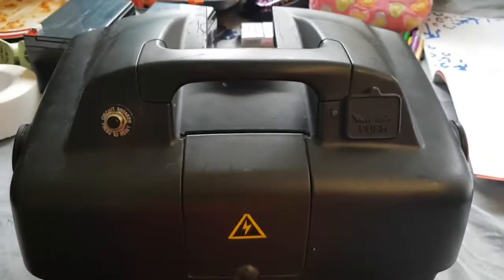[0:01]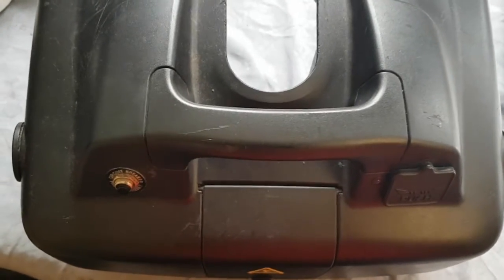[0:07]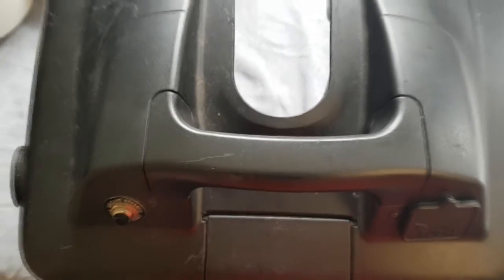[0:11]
Hi, today I'm going to show you how to change the batteries in an INVACARE LYNX scooter. This is the battery pack.
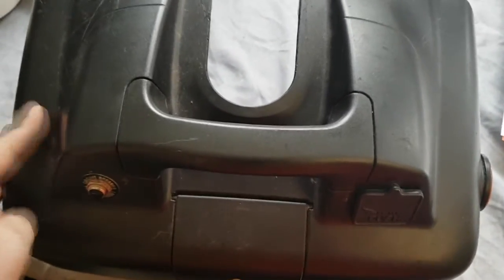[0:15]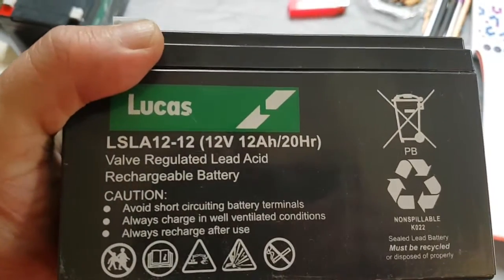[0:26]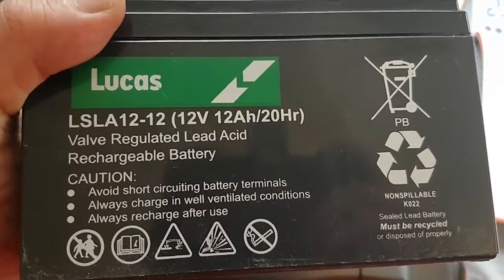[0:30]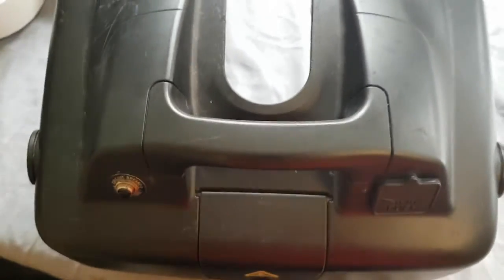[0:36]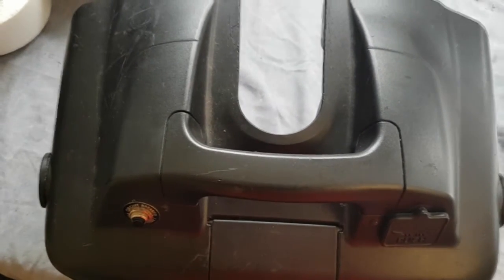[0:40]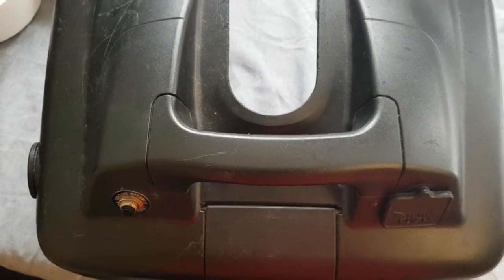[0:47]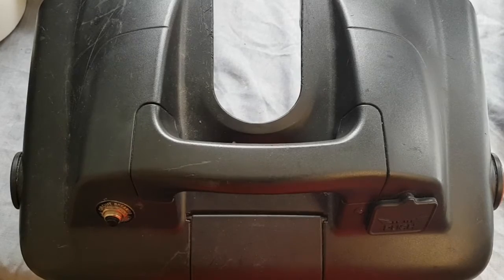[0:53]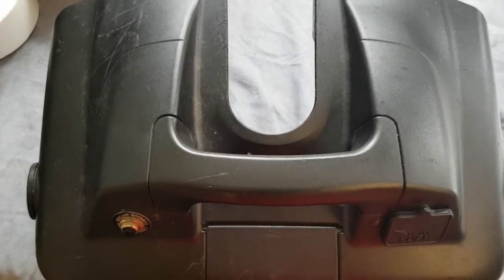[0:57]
Sometimes the batteries go, obviously, and I've bought the batteries that are needed: 12 volt 12 amp. I bought this one off Amazon for £22, which is reasonably good considering there are other places you can go, and for the same basic battery they'll charge you £30. They will put them in for you. I'm not going to say the name and place, but they will put them in for you. But 30 quid, if you can do it at home, then it's a bit cheaper, isn't it?
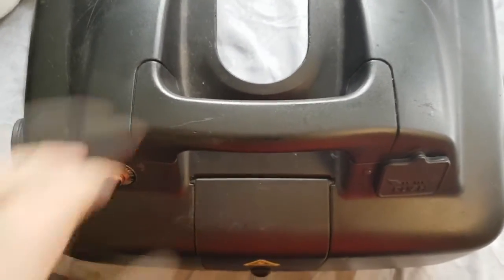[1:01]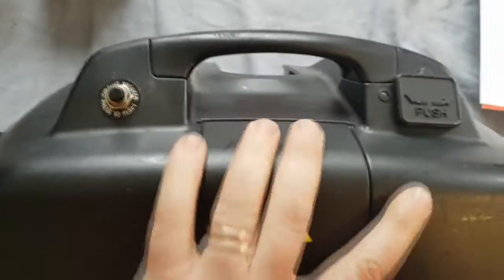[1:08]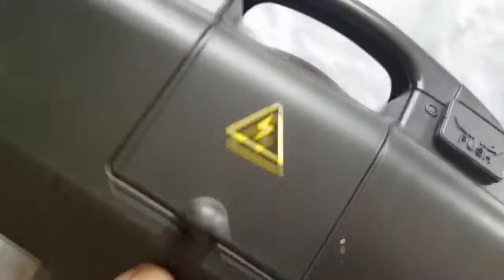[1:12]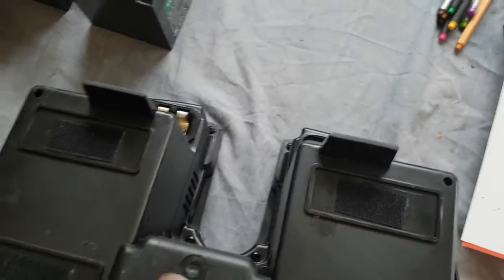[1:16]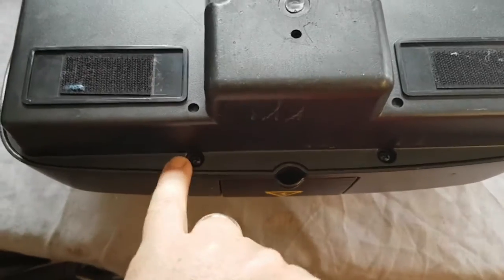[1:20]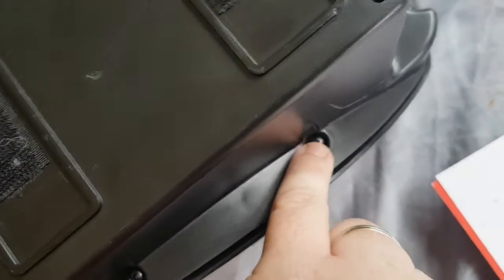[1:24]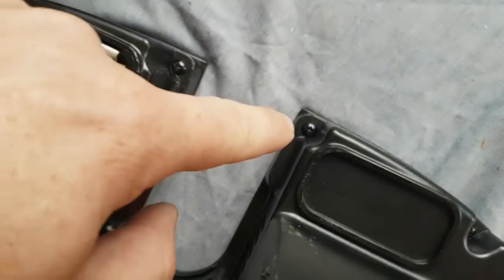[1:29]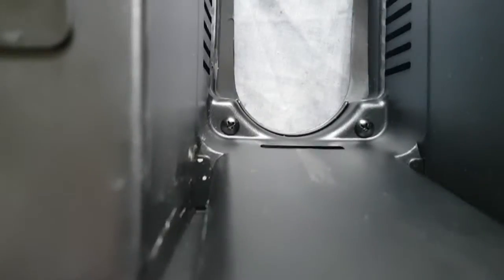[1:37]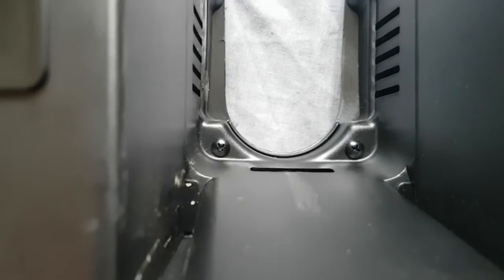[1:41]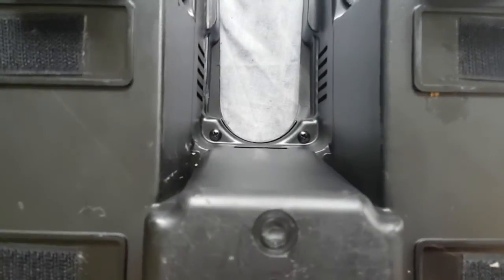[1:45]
Right, so if I turn this over, hopefully, it's a bit heavy. On the underside there are 12 screws all in all. There, one there, obviously, there, and then there's two right on the inside, which will need to be taken out as well. So 10 on the outside, and then 2 on the inside. Right, I'm gonna get on with that now.
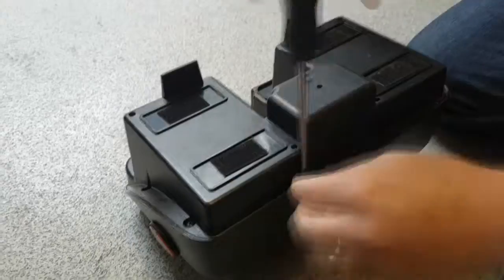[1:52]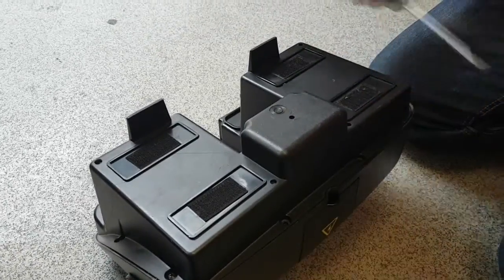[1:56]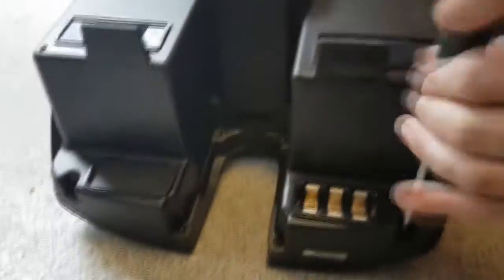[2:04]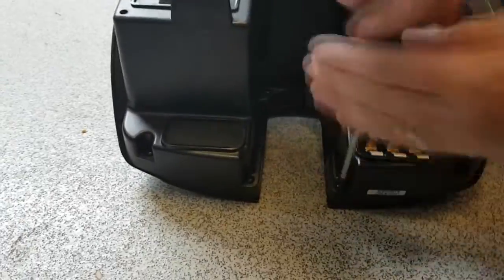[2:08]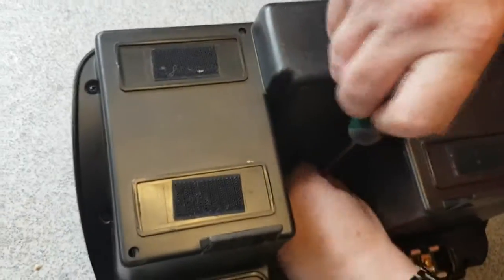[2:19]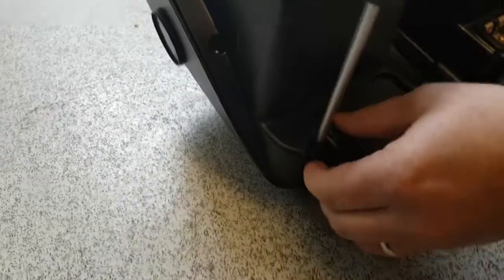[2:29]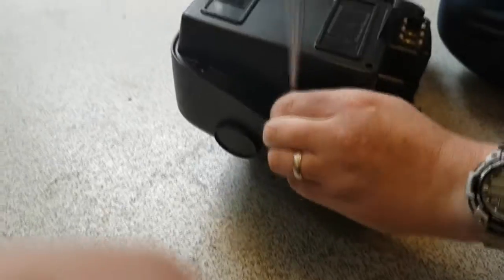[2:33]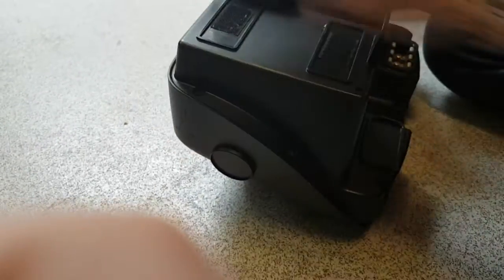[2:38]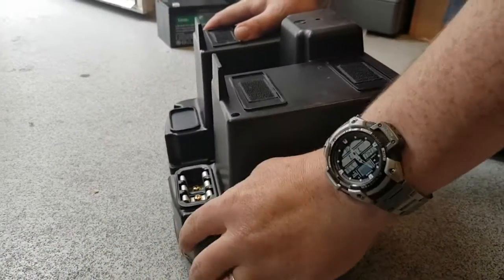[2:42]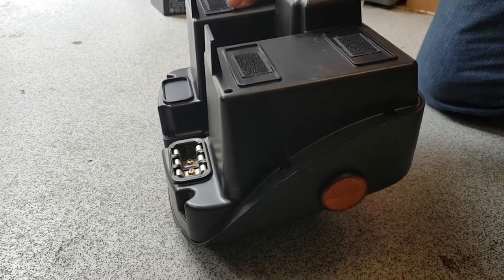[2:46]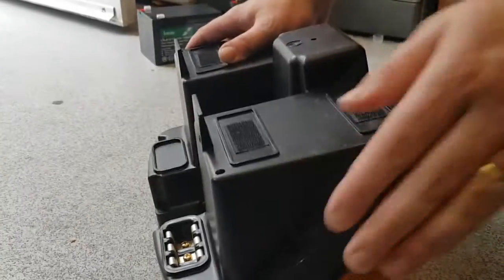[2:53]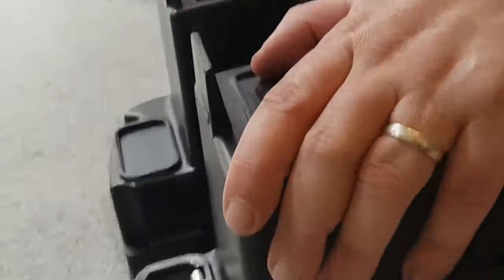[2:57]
Right, now we've got all those screws out. Just important to know, these screws are all the same size, so you can just put them into one pile, it'll be fine. There's no different size screws to make sure it's different places, so that's fine.
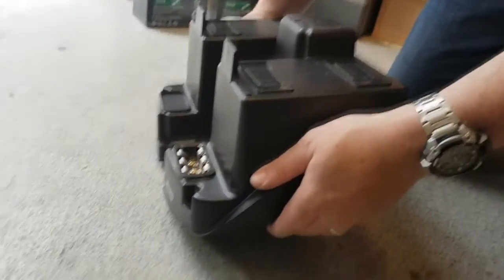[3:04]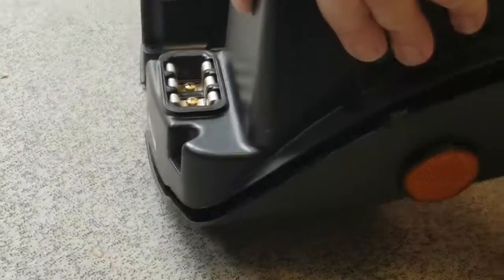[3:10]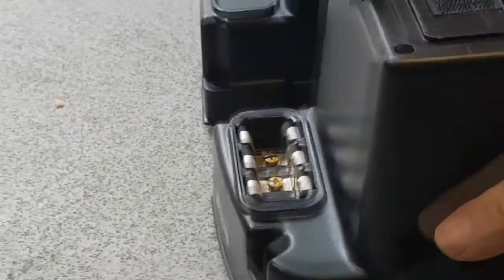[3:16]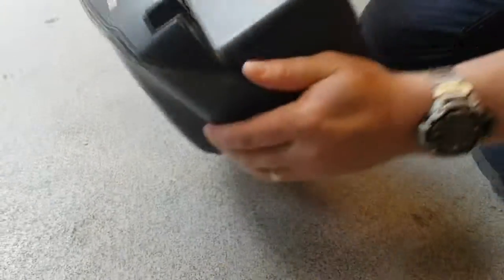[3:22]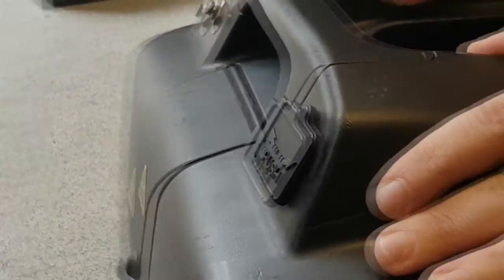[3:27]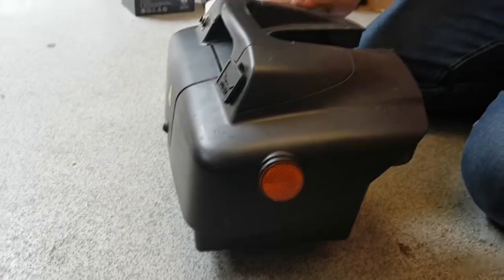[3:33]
Right, you've now got to hold it by here, and the same on the other side, to turn it. Because if you try and do it like that, the top will come off, see, like so, and that's not a good way to do it. What I find is easier is grab it by there, hold it, and turn it this way. Alright, so now we've got it the right way up, and you can just lift, not go nuts though, just lift slowly, and that'll come out. Okay, now it's opened.
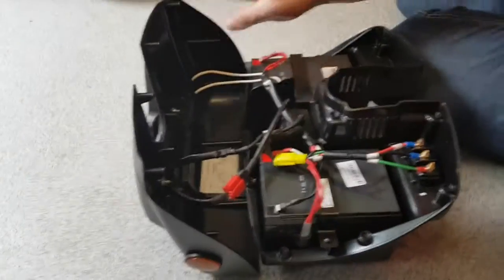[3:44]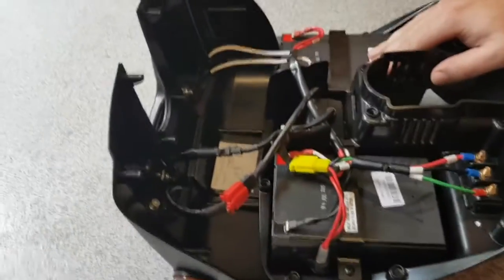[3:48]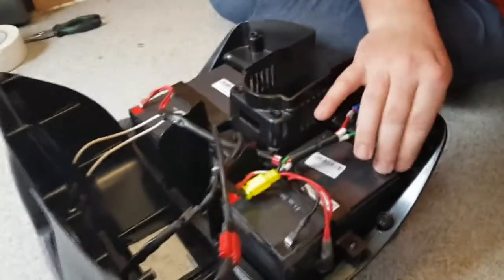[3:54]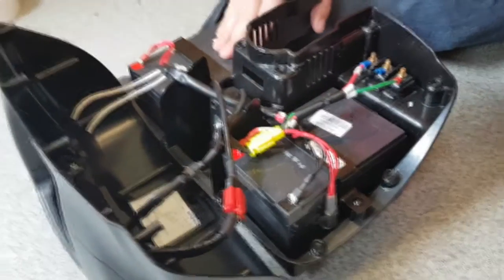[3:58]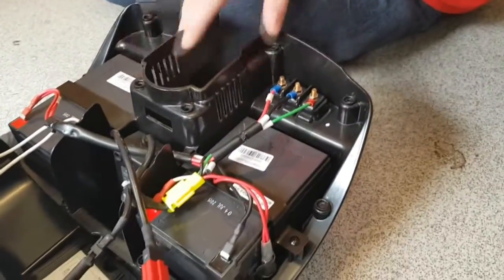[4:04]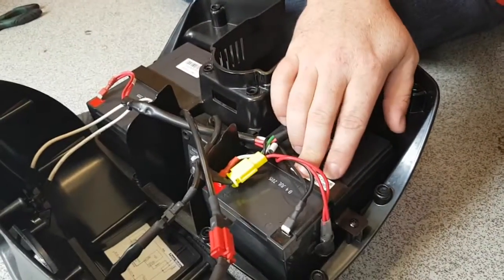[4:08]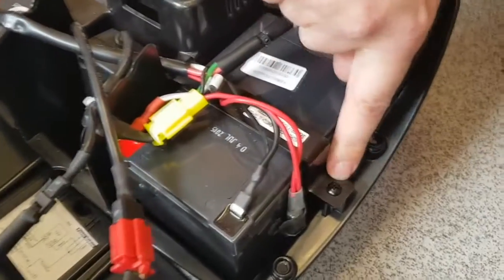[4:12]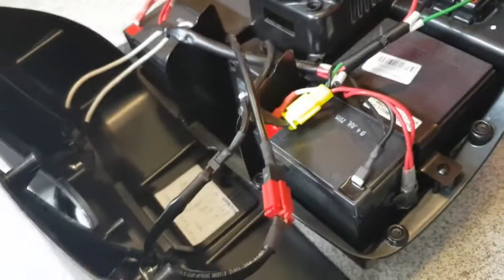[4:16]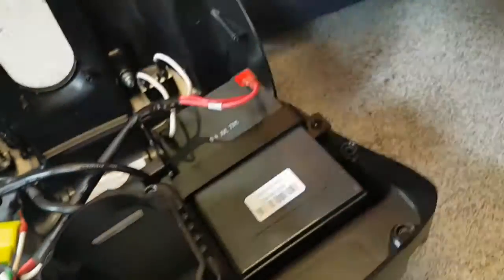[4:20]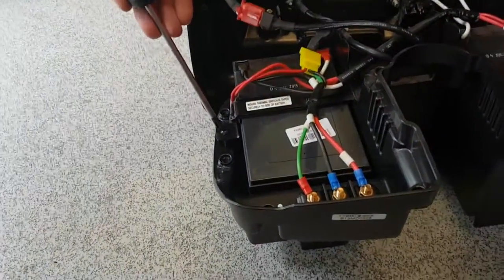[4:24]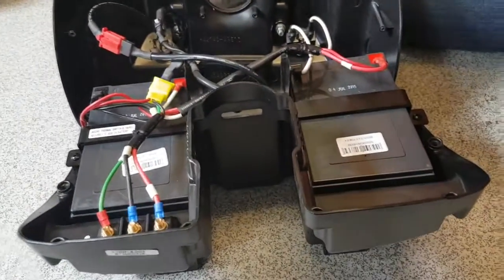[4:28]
There you'll notice there's 2 batteries in it, and according to the online manual, this is the left side, this is the right side. Now the easiest way to see which side it is, have this bit facing towards you. You'll notice that they're secured in place with these brackets, with a screw that side and a screw that side. If I turn it towards the camera, you can see the screw there, then the screw there. So I'm not going to unscrew them yet, I'm going to take the wiring off.
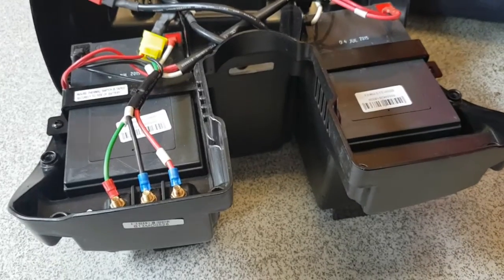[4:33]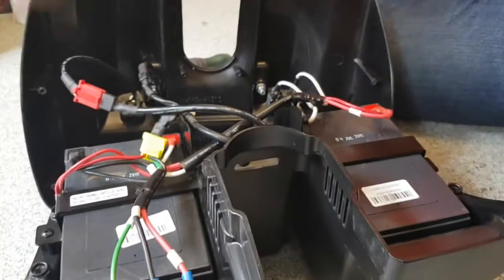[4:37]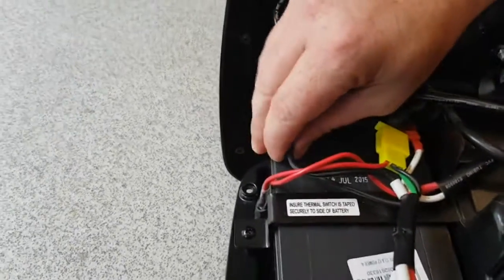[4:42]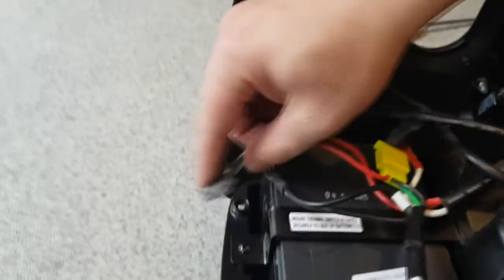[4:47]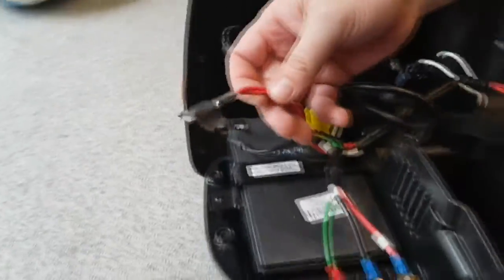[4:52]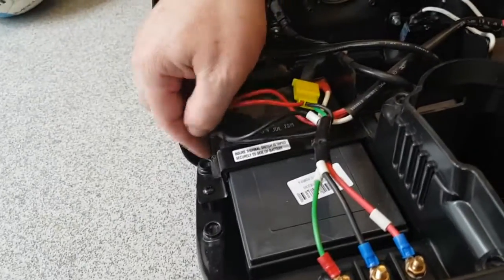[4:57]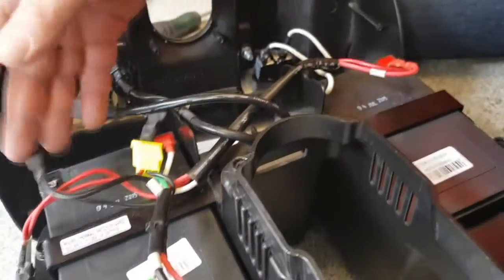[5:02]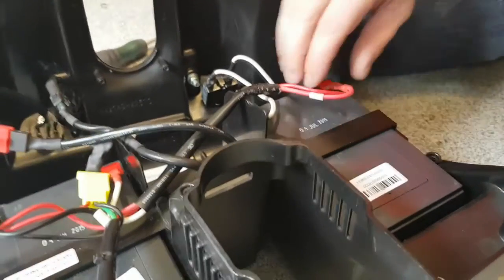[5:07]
Now, again, according to the manuals, there's a certain way to do this, and that's by disconnecting the negative black lead from the left hand side first. So that should be secured on there, and that is a thermal switch, so it's a thermal cut-off. I'll tell you more about that soon. Right, so we've undone that one. The next one is this red one on the right hand side.
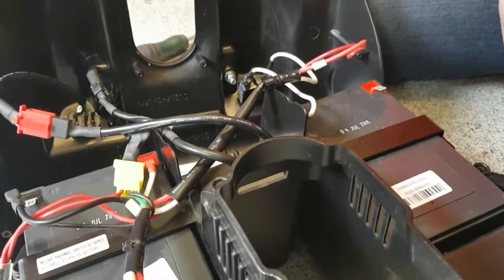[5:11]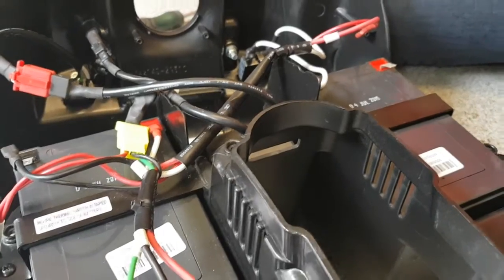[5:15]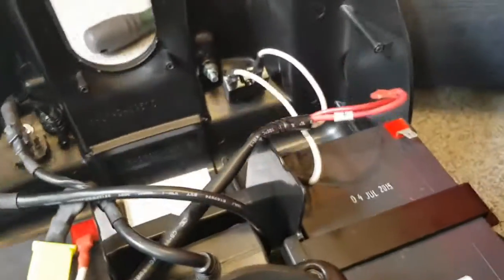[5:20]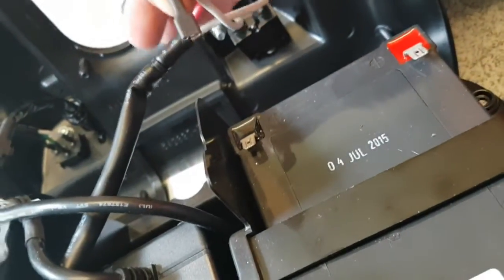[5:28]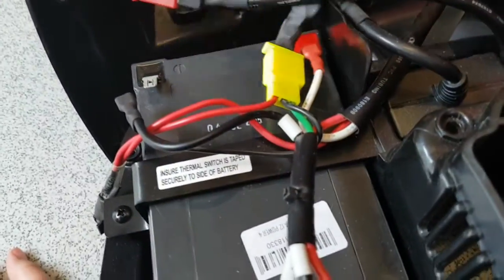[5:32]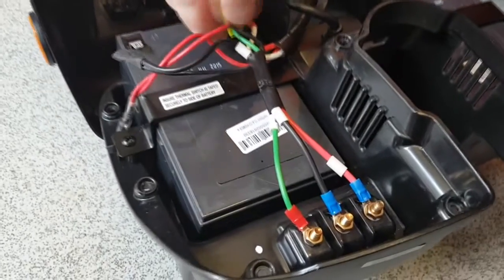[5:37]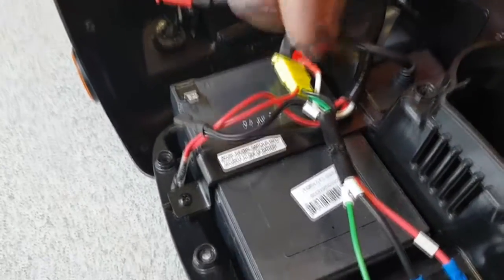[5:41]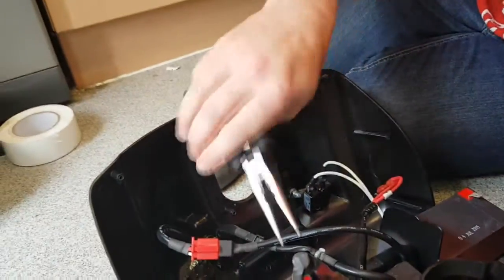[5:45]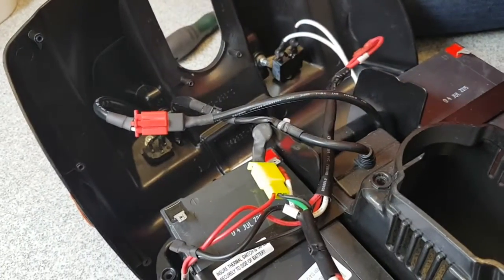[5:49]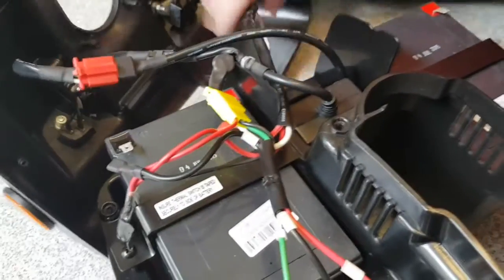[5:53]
So we undo that, and then the next one is the white lead here. It is a bit of a pull, unfortunately. They don't give a lot of room. Alright, so we just pull that off, or wiggle it off. So that's off now. Then this is going to be a bit more awkward because you've got all this here and it's a nightmare. So you can either try and grab it or grab a pair of needle nose pliers, just grab it and there, away. So you've now undone all of those.
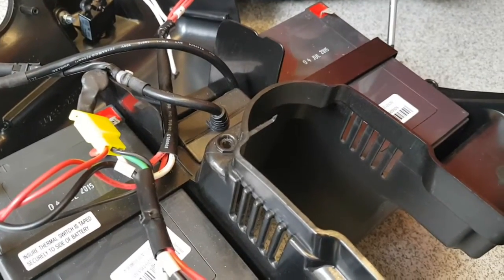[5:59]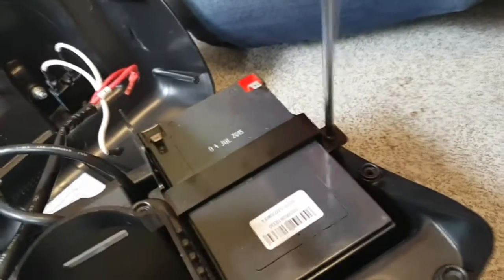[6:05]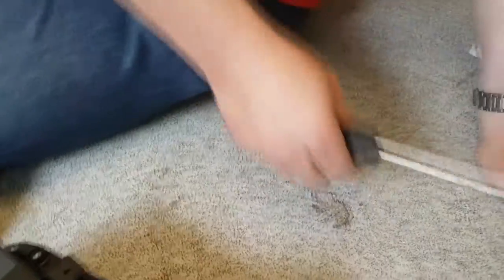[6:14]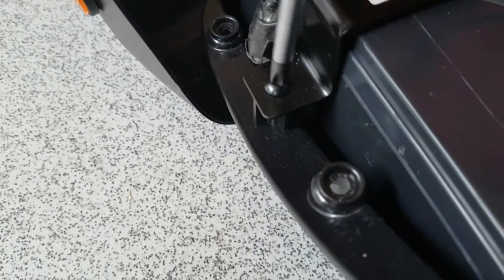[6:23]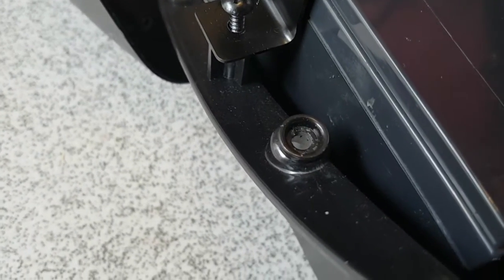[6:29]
Now what we're going to do is unscrew these and take the plates off. These are, I believe, the same size as the other ones. The other ones have gone missing, so I don't know where they are. Lots happened while trying to film this, so unfortunately it's a lot of stop starting and grandchildren and stuff like that. So undo those. I would keep these separate just in case. Okay, so just put them over there a minute.
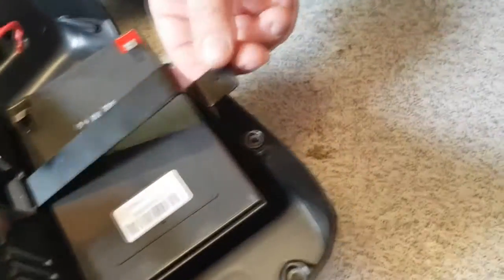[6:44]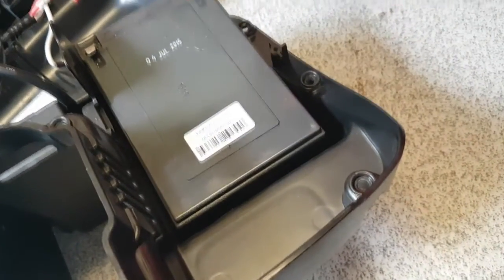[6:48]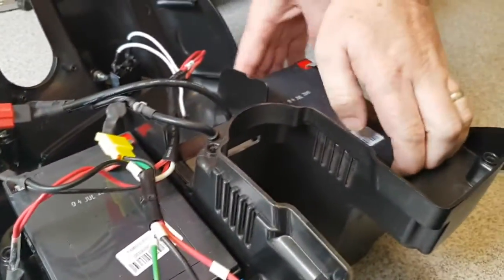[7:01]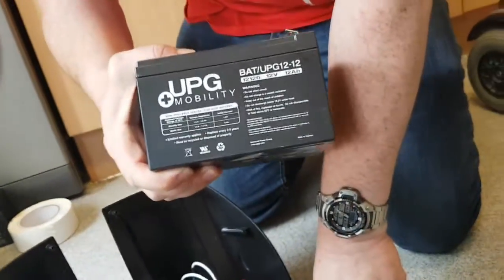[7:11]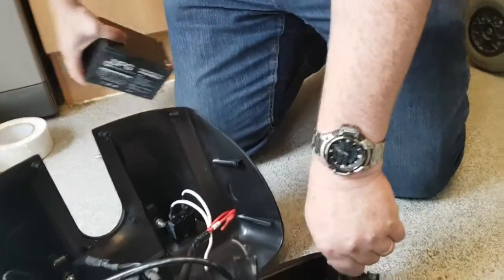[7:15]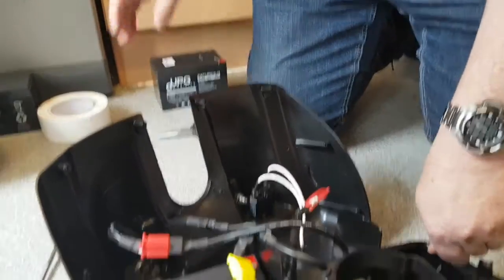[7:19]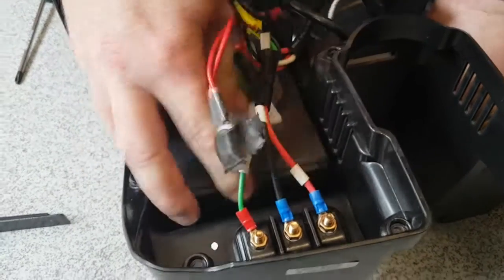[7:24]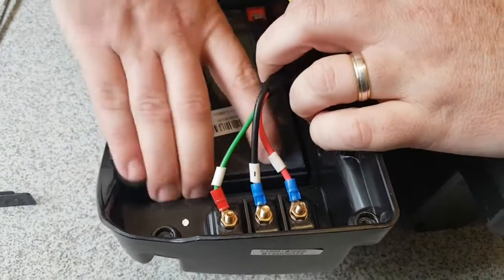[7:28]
Now, just to release a plate, where you've undone the screw, just lift, pull out. Oh, that's all it is, simple as. Alright, so we'll do the same to this side, lift and pull out. Now, I'll keep them each way. Right, so there we go, that's the one I had in there, and really heavy. Well, they are heavy anyway. Just put those by the side. Right, I'll keep the pressure on there. You're going to have to be careful with the leads, obviously.
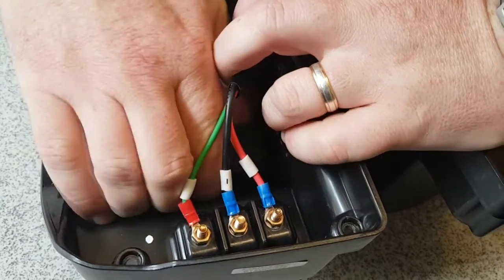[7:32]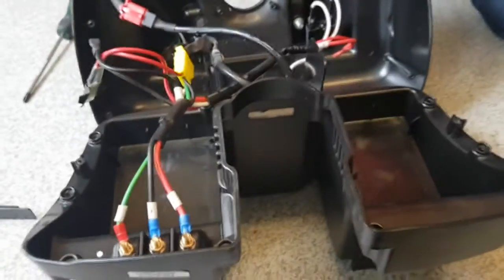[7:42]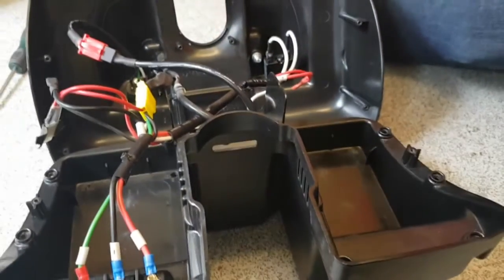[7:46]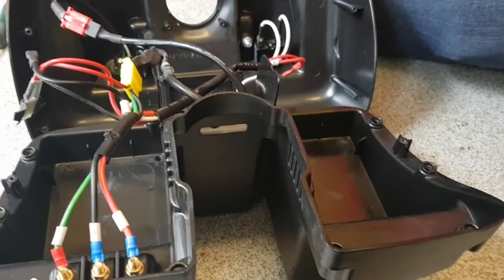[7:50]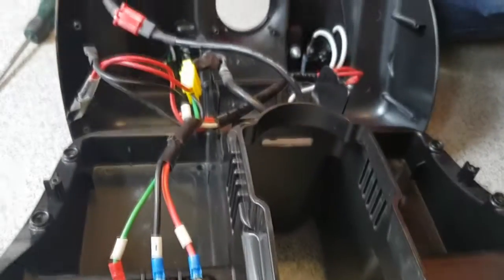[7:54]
These are... right, there we go. So those are the two that were put in there, unfortunately, a year ago, and we've noticed now that they seem to be going downhill. They're not holding their charge as much, so unfortunately we've had to replace them.
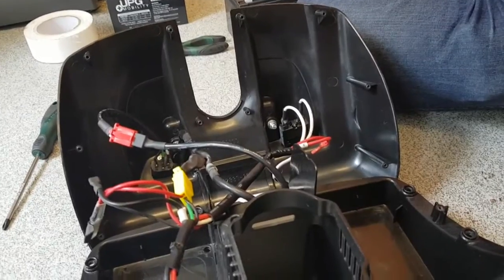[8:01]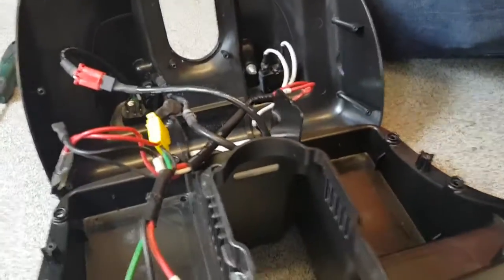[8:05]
Right, so we made sure they're exactly the same. So they are 12/12s, exactly what comes out is going in. Right, so.
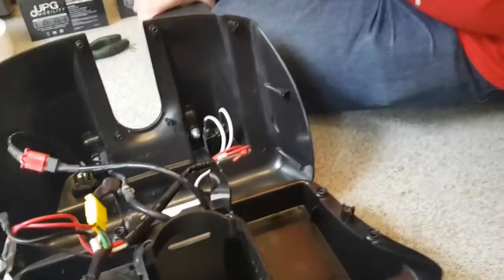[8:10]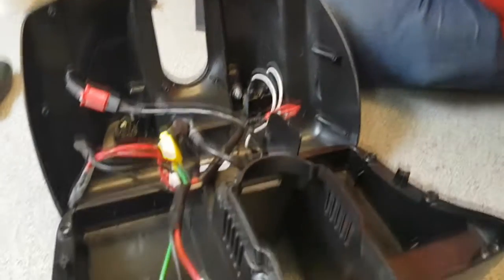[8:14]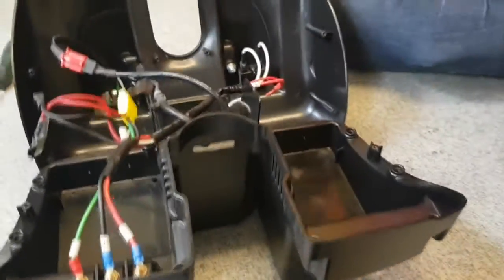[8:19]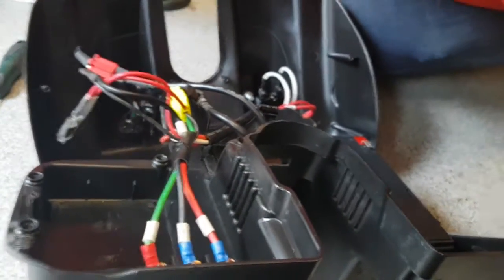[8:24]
Sorry. Luke, go out, please. Grandchildren, sorry.
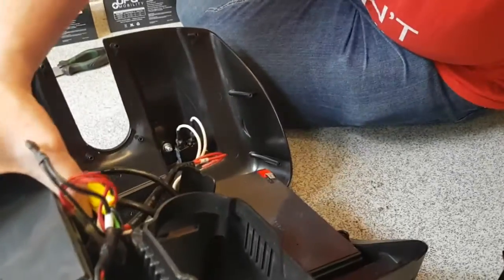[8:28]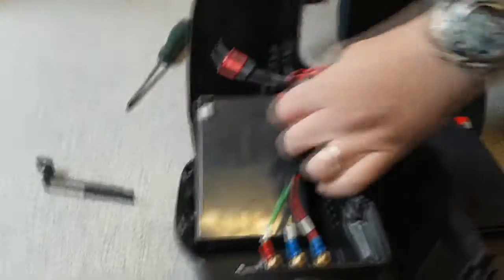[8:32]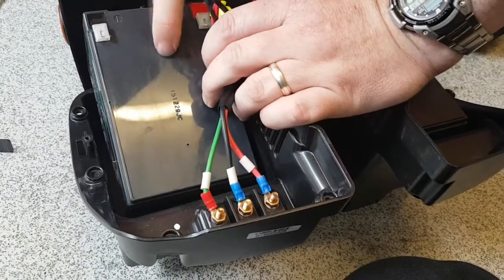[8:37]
Right, okay. I'll put these in each side. I'm going to take the wires away. But this, I'm going to leave like that for a minute.
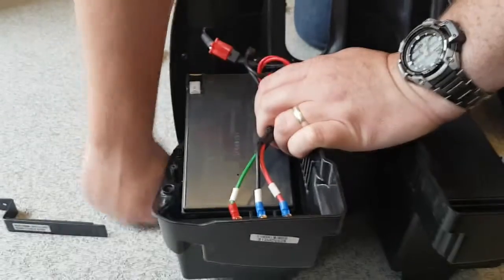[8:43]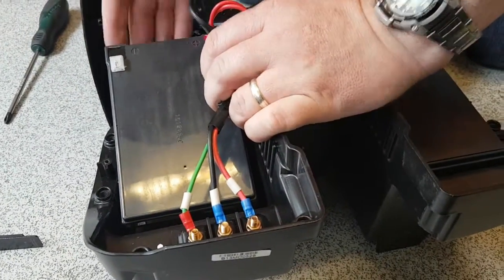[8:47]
Pause a second. Sorry. Or is it still recording? Yeah. Right, I do apologise for that again.
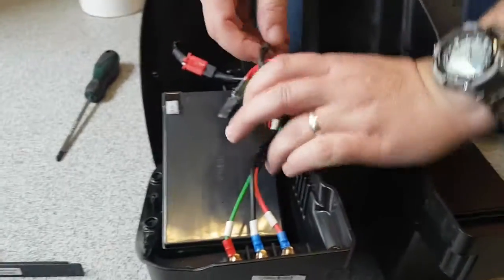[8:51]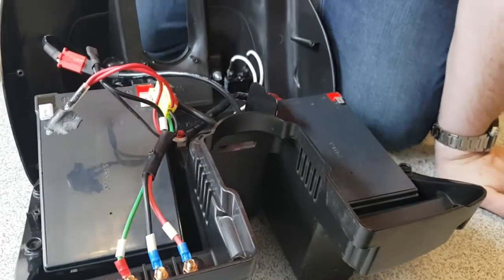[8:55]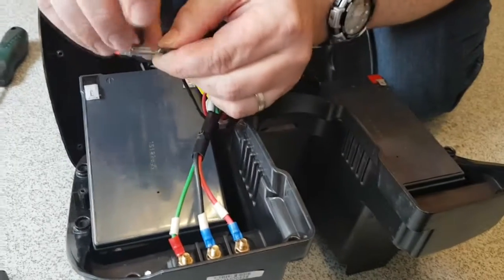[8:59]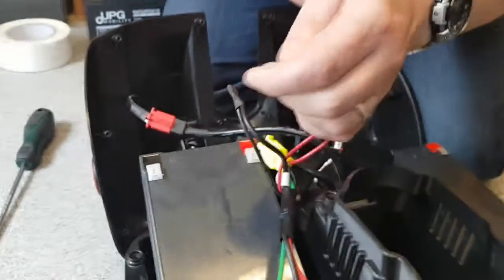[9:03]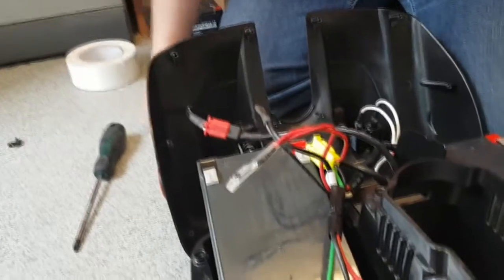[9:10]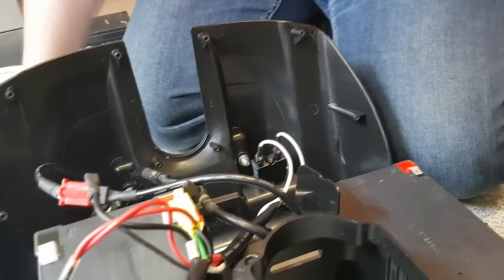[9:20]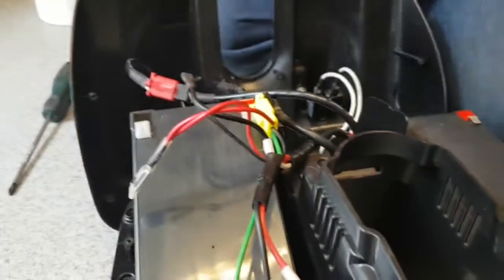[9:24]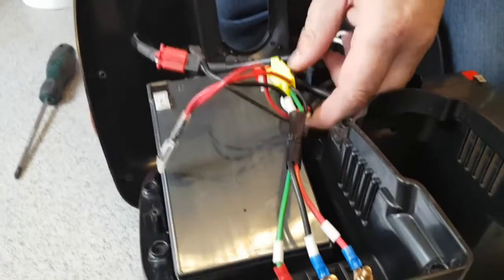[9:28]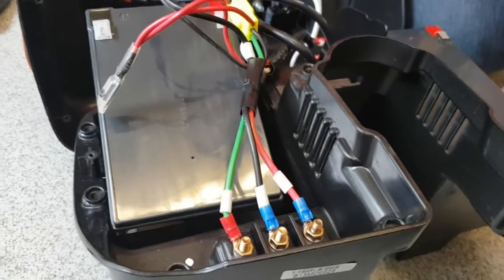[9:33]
I'm going to leave this like this for a second because here is a bit that comes into play. Now, this is, as I said before, your thermal cutoff. I think if the battery gets too warm, then it cuts off power or hits the trip switch, which is here. I could be wrong, but according to the manuals, this tape is supposed to be on it, but it would be on it if you got it serviced.
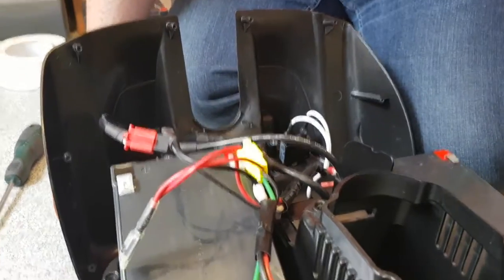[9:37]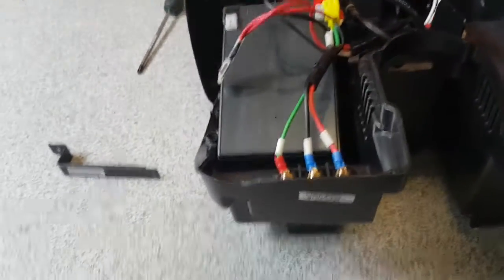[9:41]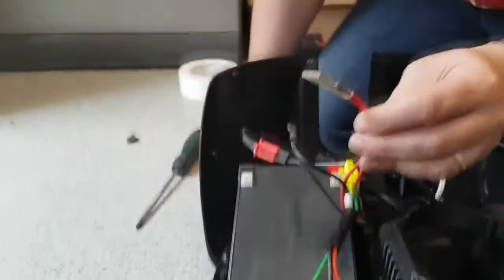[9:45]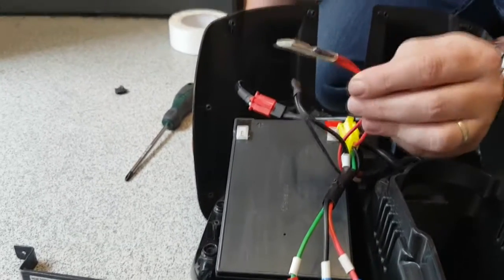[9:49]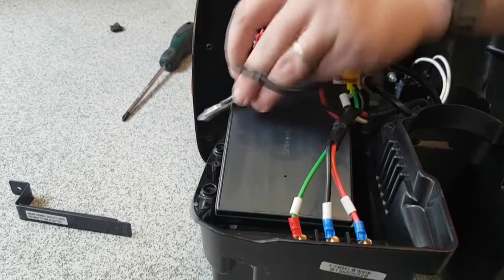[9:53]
Actually, I tell a lie there. On the manuals it said if you get it done professionally or by one of the shops, they replace the tape. But because I was there when they replaced the batteries last time, they didn't replace the tape. They just took it off and put the tape on that was there already.
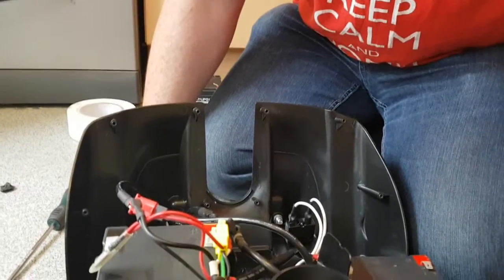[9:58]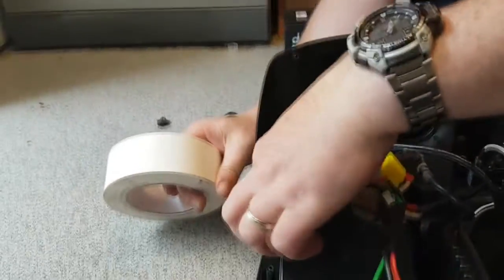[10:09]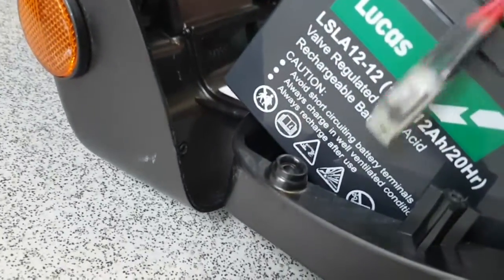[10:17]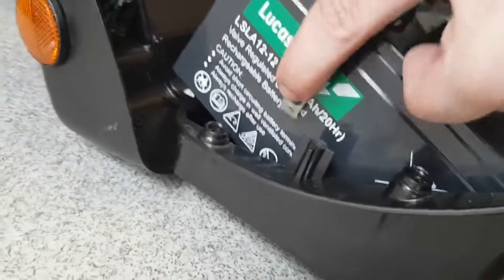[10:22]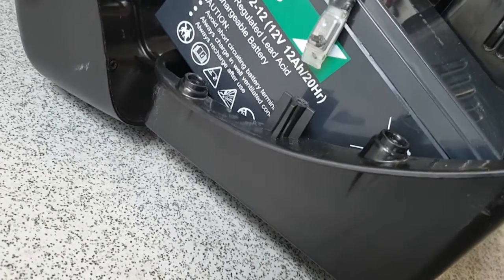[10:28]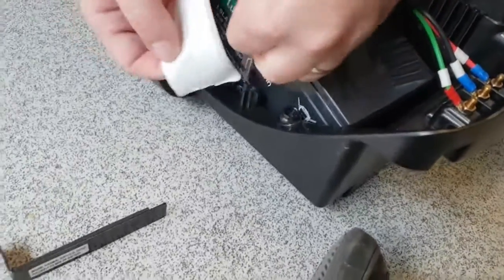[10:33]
Now, according to online, you can either use that, which we don't have, but it also says duct tape, because it has to be secure. Come around here, look. It has to be secure to the battery, alright? So they say use duct tape, so that's what we're going to do. We're going to duct tape it to the side of the battery and keep it in place. It says to wrap it around, but what I'm going to do
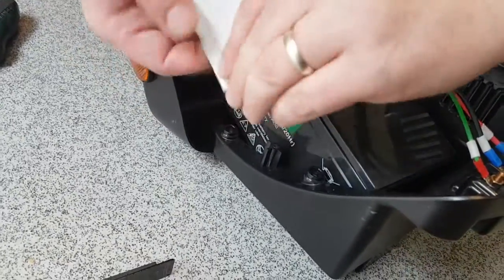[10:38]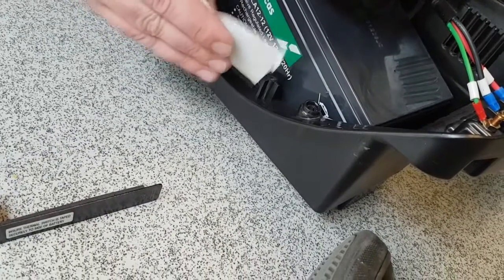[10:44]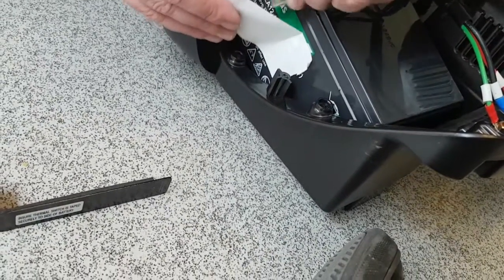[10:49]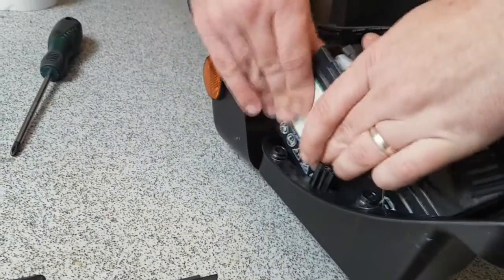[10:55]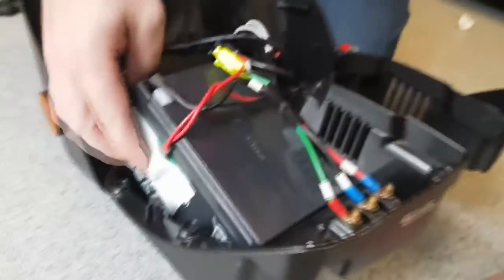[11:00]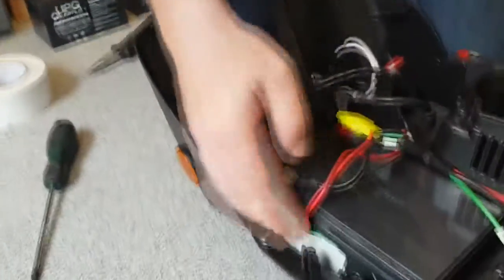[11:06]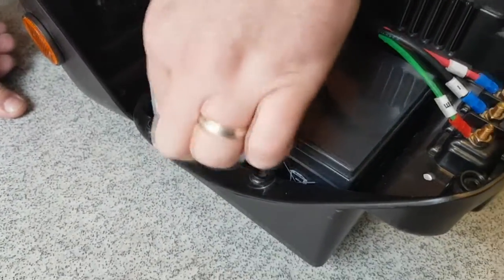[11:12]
is put a bit... fiddly. So I'm going to put it in there, a bit further down, like so. So now I've got that in place. Right, I'm going to make sure that that's down, so that it is firmly against there. So that's where it's supposed to be.
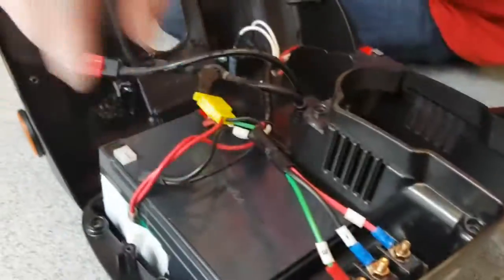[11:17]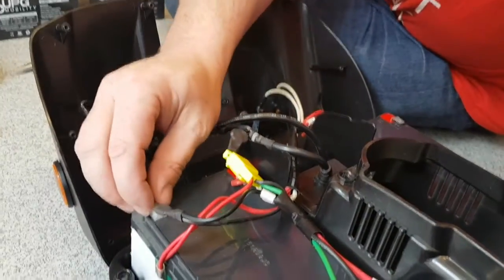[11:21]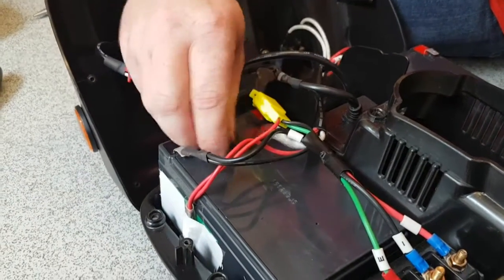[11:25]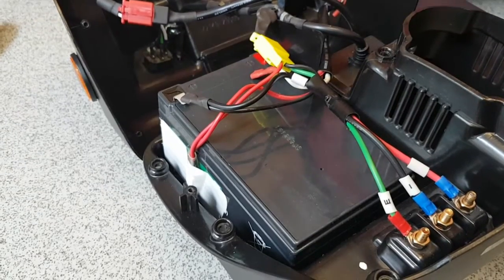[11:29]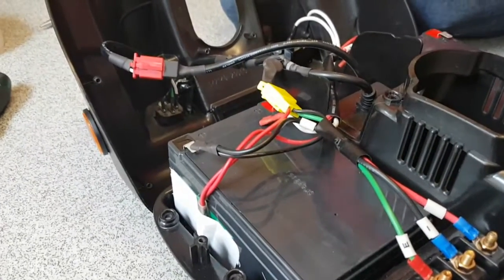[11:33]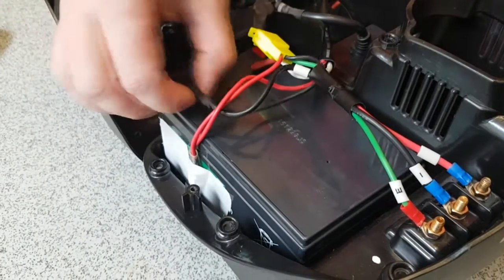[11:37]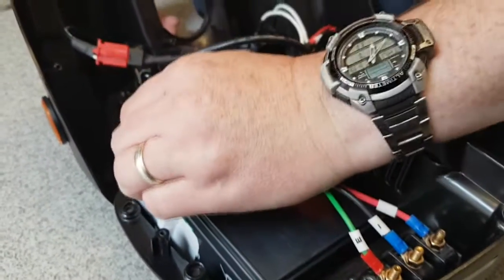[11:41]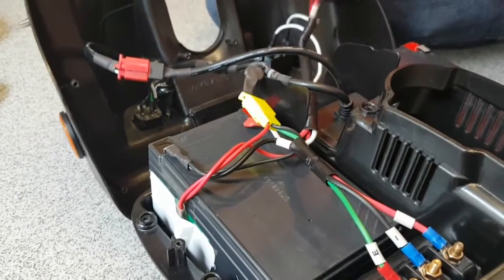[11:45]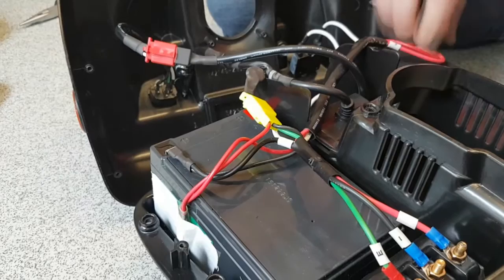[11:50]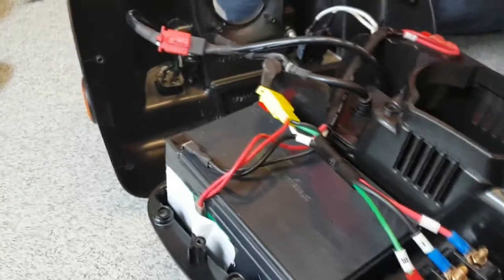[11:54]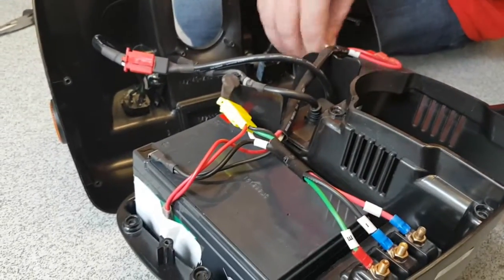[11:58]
Now, okay, take these off. They say in the manuals to do it the same way as taking them off, basically. So you put the negative on first. If I pop that underneath, it might be better. Right. Then the positive lead onto the right. Okay, so that's on. Make sure that's up there somewhere. Then the white one to the right again.
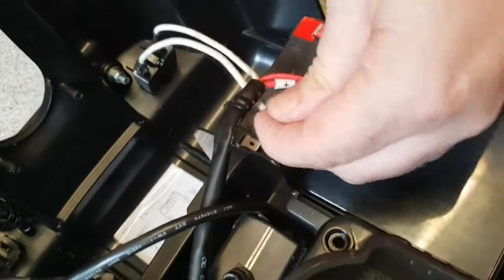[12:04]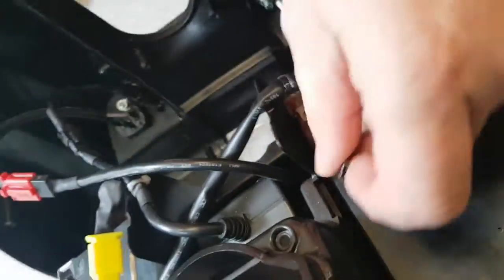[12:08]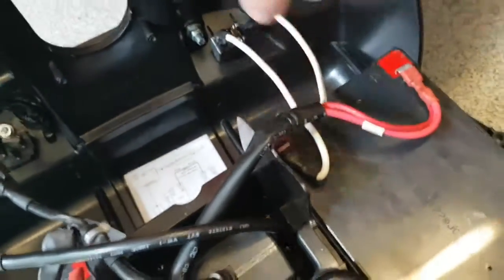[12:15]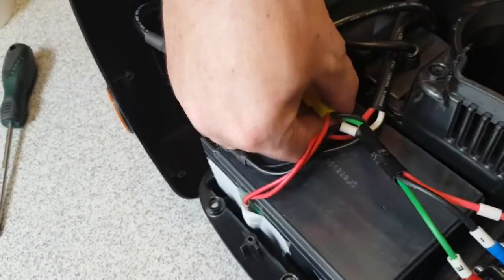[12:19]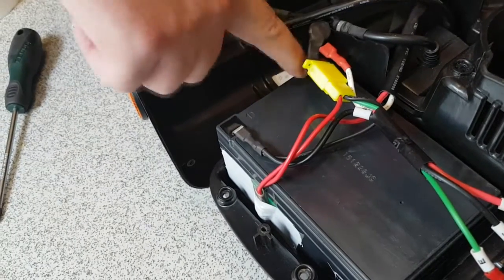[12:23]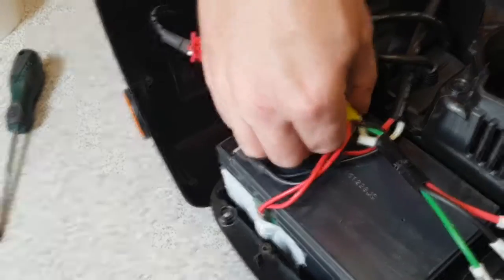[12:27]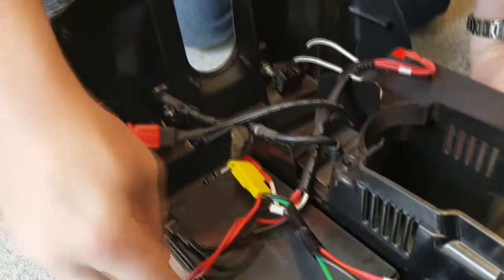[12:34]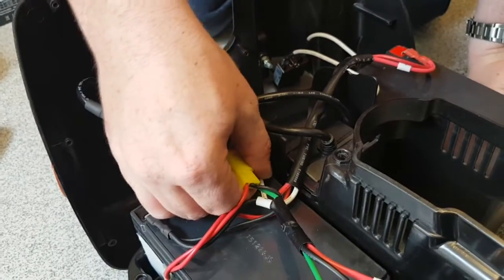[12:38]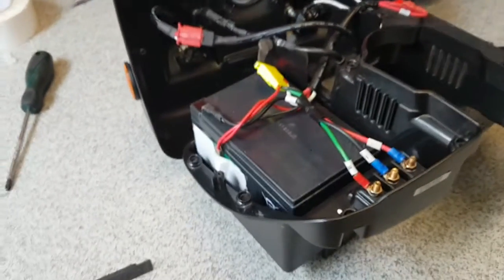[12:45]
Obviously fiddly. Hold on, I have to move to get to there. Alright, so that's on, and then the last but not least is the other white lead to the positive terminal on the left hand side. There we go. So just check that you've made all the connections before we put this back on. So that's all okay. Alright, and next we put these back on.
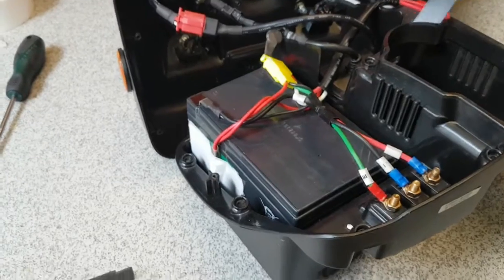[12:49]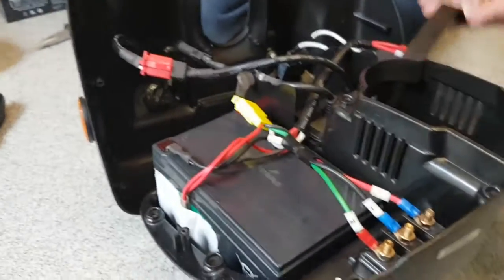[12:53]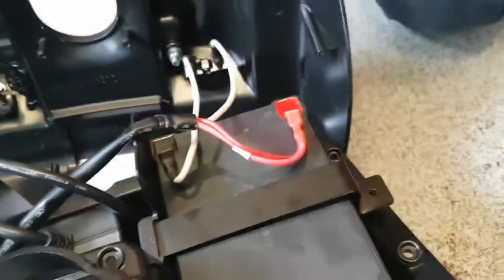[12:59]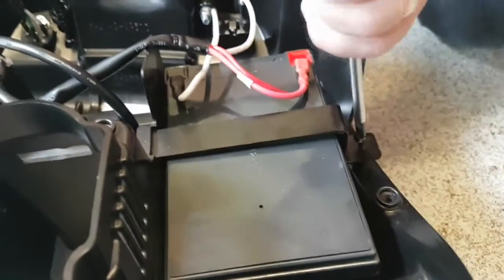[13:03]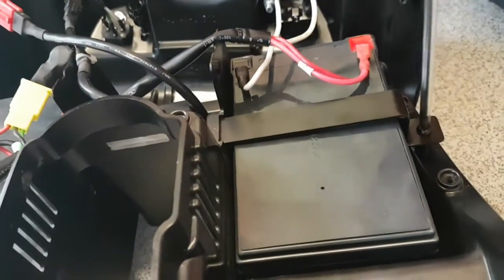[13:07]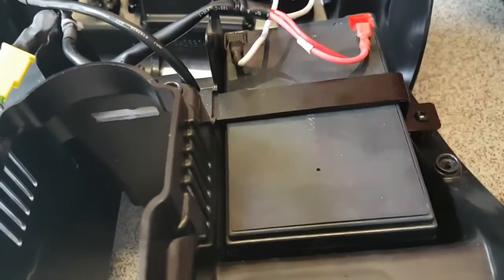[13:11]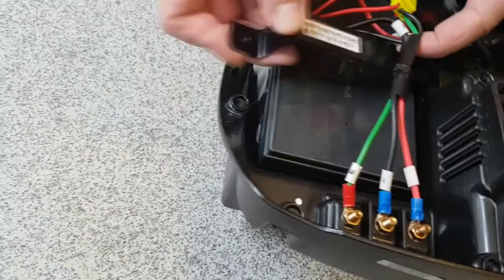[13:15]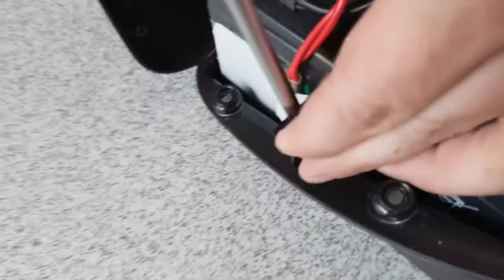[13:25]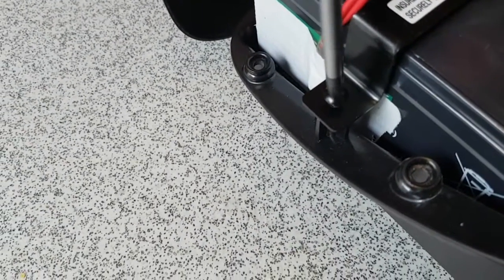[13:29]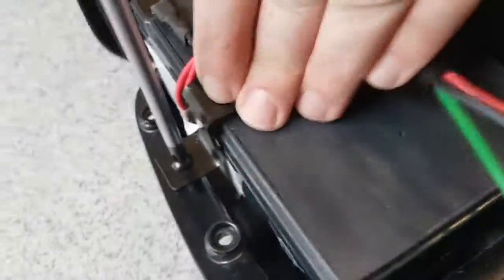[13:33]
It's the same way you put them in, like so, and put them in place, and screw them back in. Obviously do the same on both sides. Well, yeah, they're going to see that anyway. Alright, and this one is going to be a bit more fiddly because of all the wires in the way. There we go. Alright, yeah, there we go.
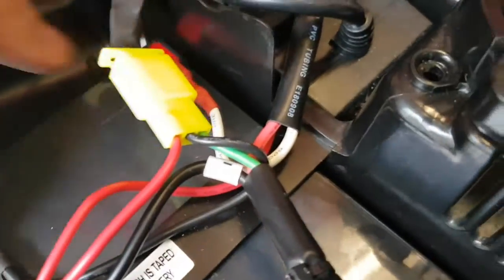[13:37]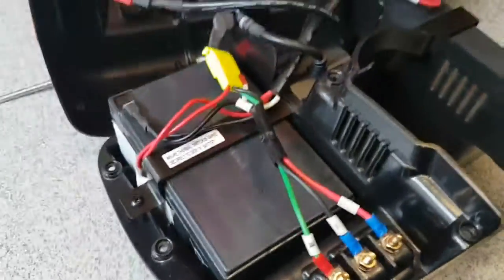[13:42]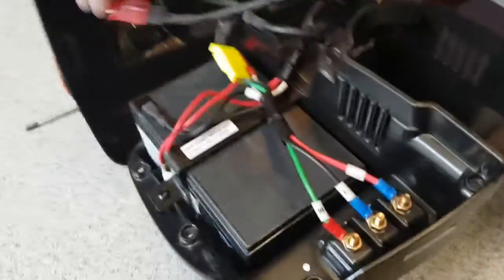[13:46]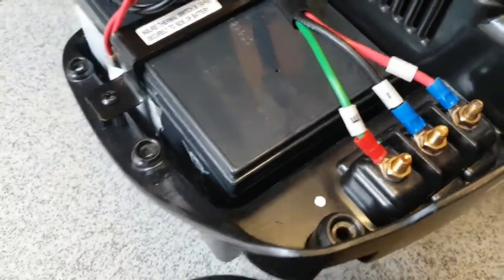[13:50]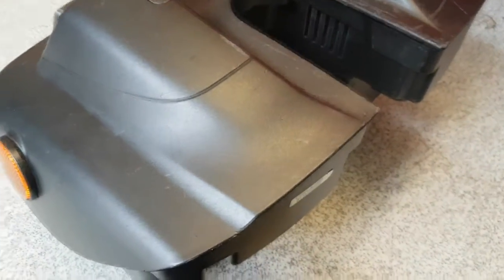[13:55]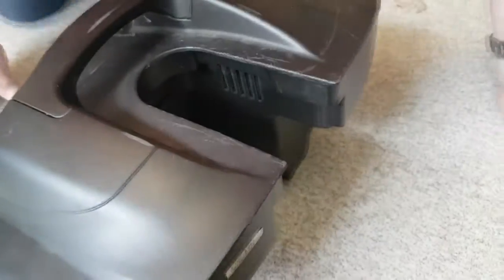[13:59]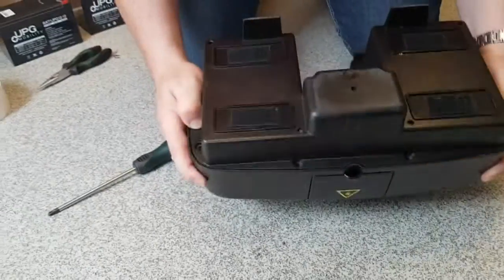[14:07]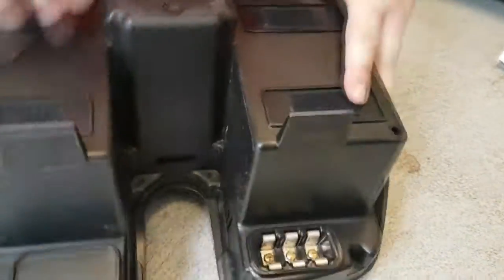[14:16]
So that's all tight. Those are not moving. And all the leads are in the right places. So now it's a case of grabbing the handle and putting it back on. Obviously holding again. Alright, and turn it back over and put the screws back in. Remember, all 12 screws, including the 2 there, because they're not on the outside, they can be forgotten quite easily.
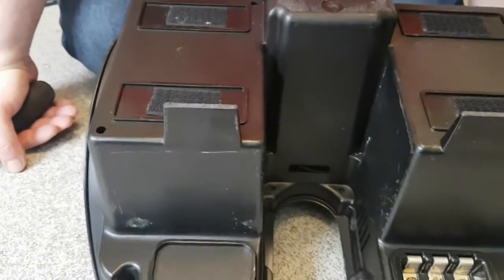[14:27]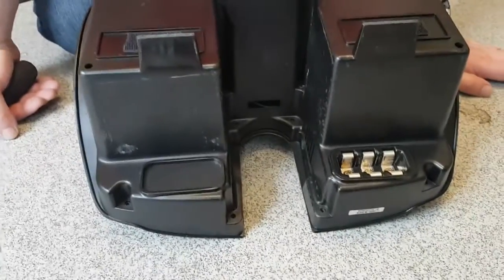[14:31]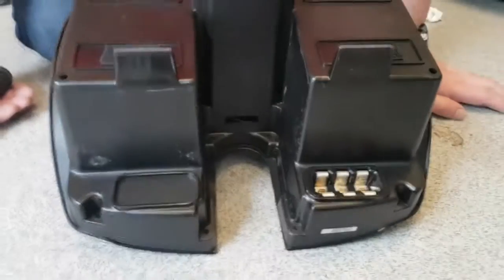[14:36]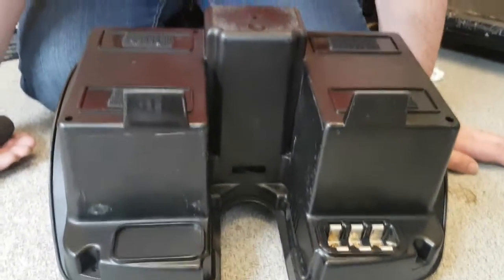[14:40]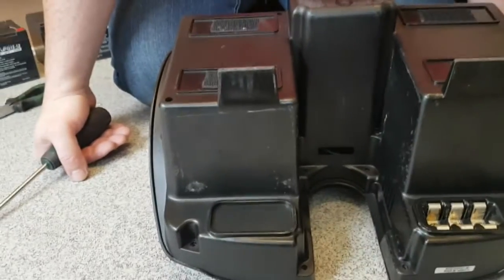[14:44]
This may be virtually the same for other scooters, I don't know, but I hope this video helps.